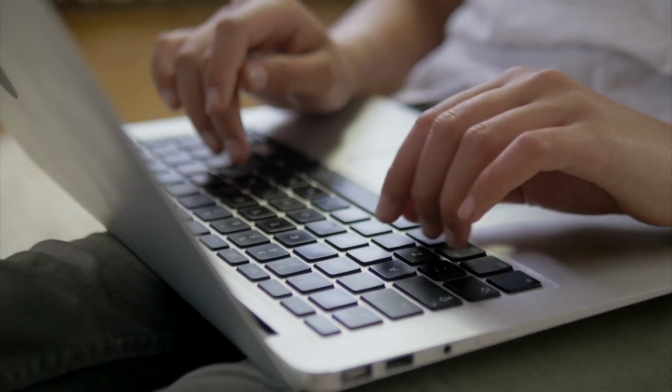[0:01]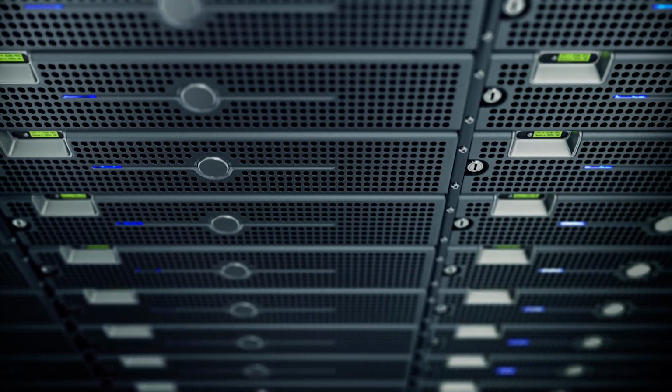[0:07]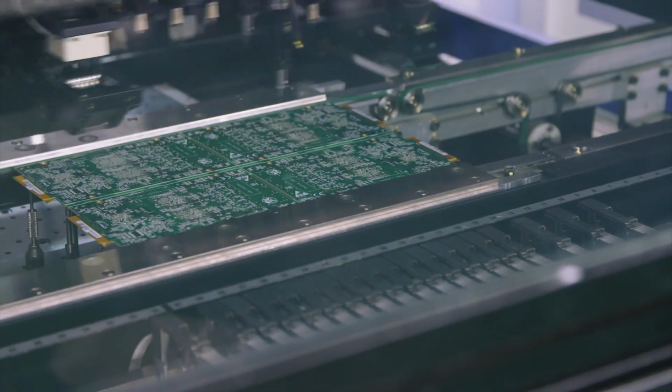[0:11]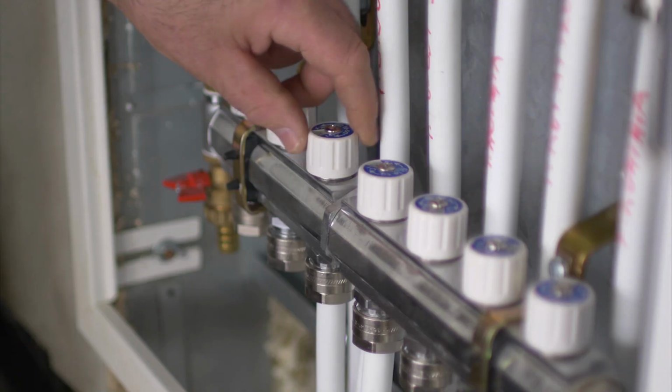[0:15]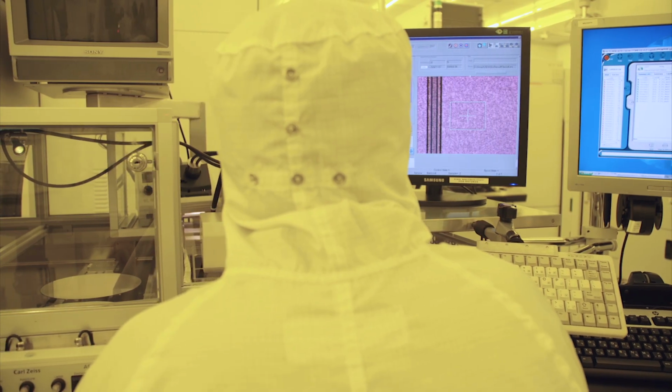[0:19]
If you ask someone to explain how a computer works from the ground up, their answer will probably start something along the lines of, well, a computer is a device that can do math, and it's based around transistors. To understand transistors, imagine a tiny water valve that you can turn on and off. If you chain these valves together in the right way, you can make logic gates, and then from there, you
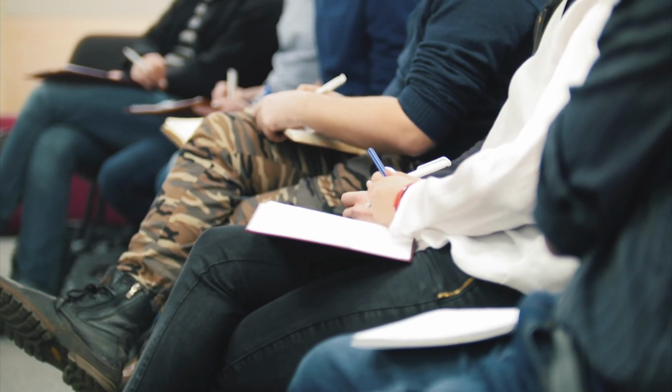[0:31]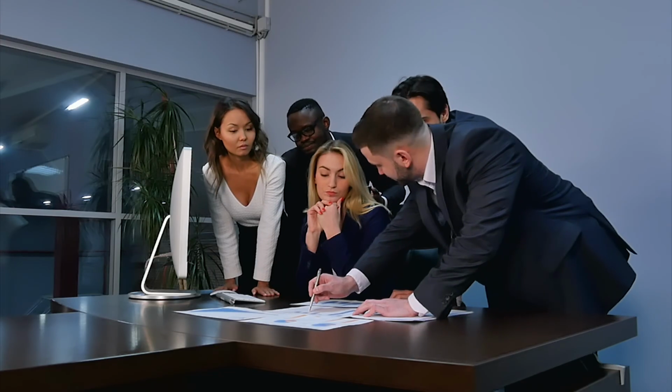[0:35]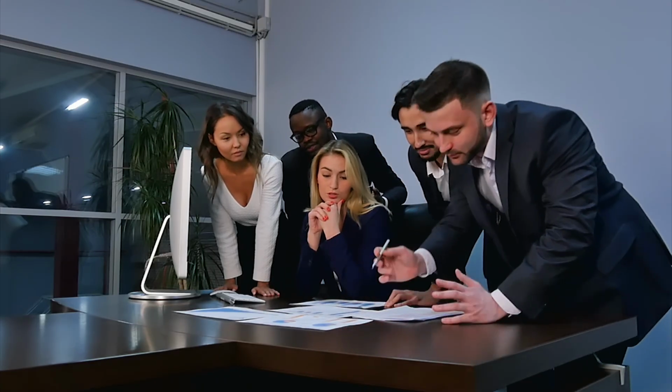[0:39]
can do computation. Now, picture this conversation happening between two people, but the one having it explained to them wasn't quite paying attention, but had to give a presentation about it on Monday to a bunch of engineers. So Monday arrives, they show up, and their boss goes, "Well, Gary, what are we building?" To which he replies, "Well, we're going to build a series of tiny valves that can do math." And everyone just went, "Well, okay then," and got to work. This is basically how I imagine the field of microfluidics starting.
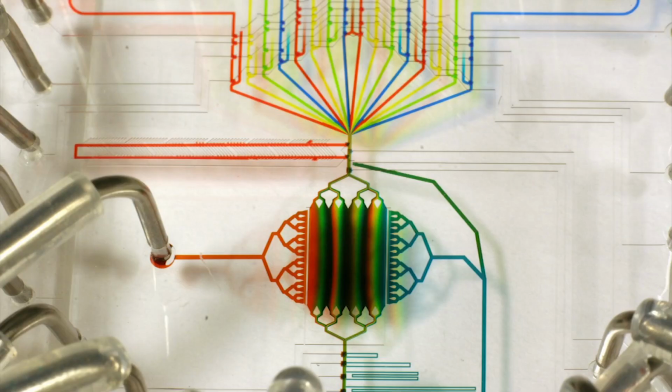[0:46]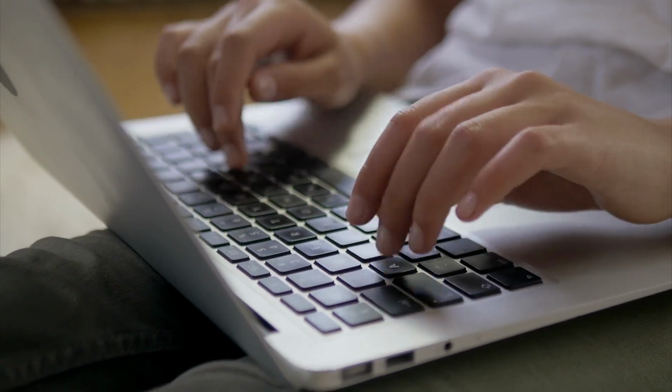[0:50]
As you probably guessed from the title, today we're talking about microfluidics. But just like asking what are all the things you can do with a computer, attempting to cover the whole field of microfluidics in one video would be insane. So let's just start with the basics.
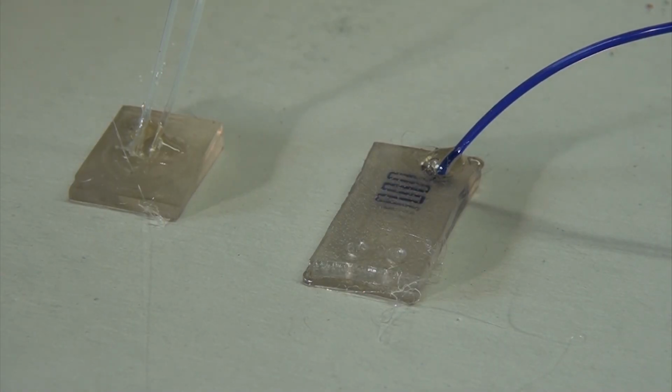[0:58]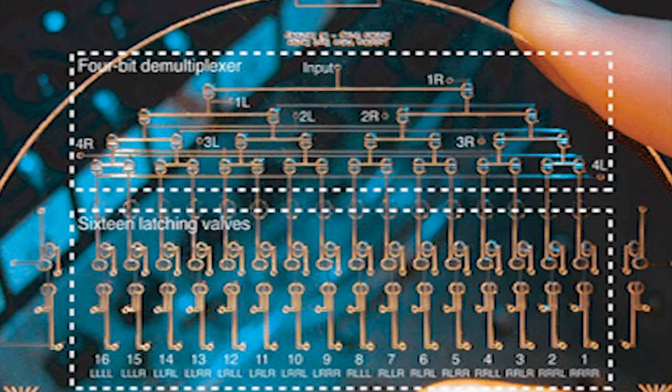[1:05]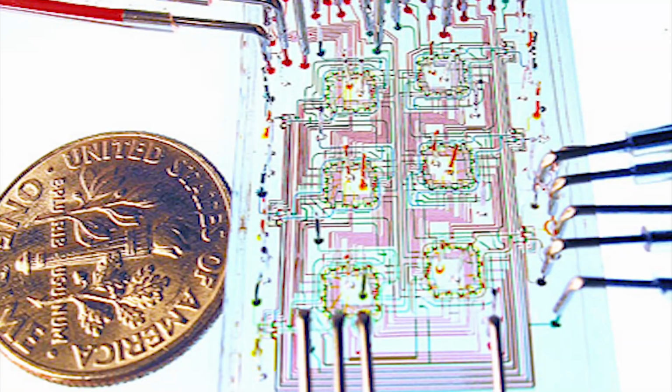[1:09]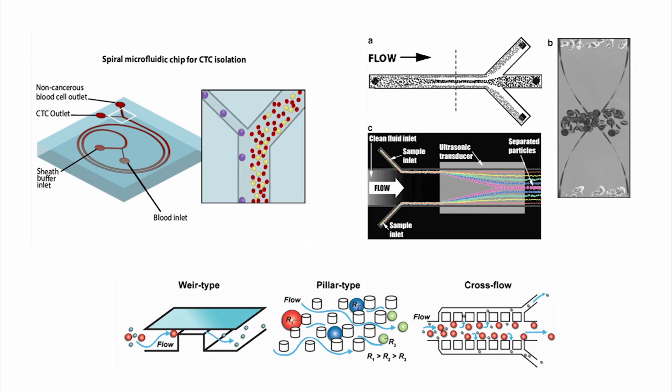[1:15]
Microfluidics is the study and creation of devices that use tiny fluid channels to accomplish an incredible array of tasks. And like computers, you can fill them full of tiny valves that, just like transistors, can be used to actually do math and form logic gates and such. But that's considerably more complicated than what we're going to be working on today. For this first video, we're just going to be focusing on designs that use the shape, size, and arrangement of solid channels to accomplish different tasks, from mixing to sorting, to give you an idea of the possibilities.
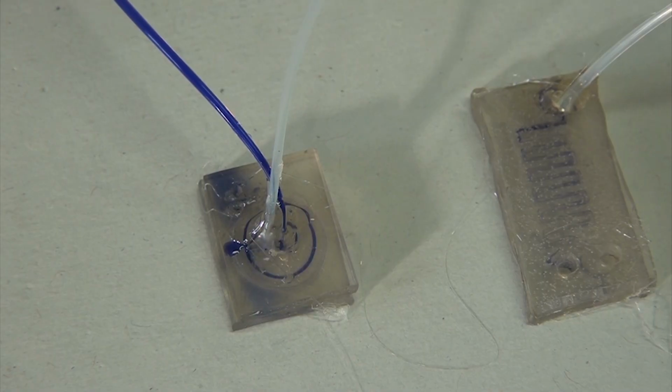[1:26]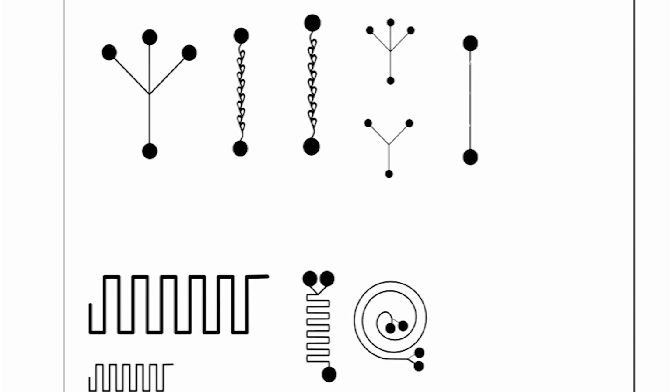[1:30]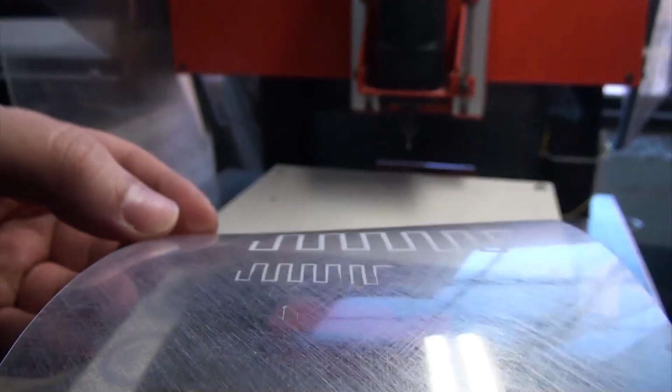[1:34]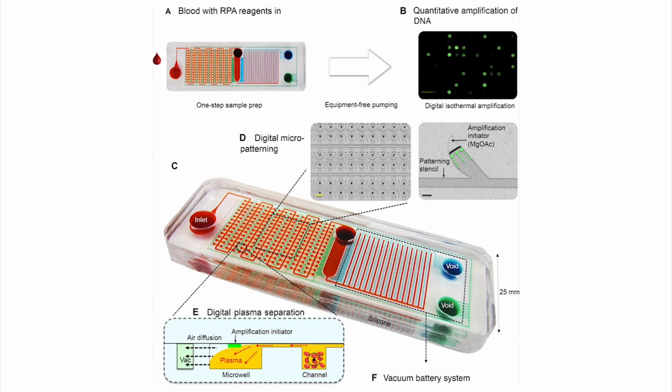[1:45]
One of the hardest parts of microfluidics is making the actual flow cells themselves. Designing them is fairly easy and can even be fairly intuitive, but taking a design and carving it into some block of material at the scale that flow cells typically operate is normally an expensive undertaking, requiring specialized equipment and weird, expensive materials. Consider that the channels in many of the images I've shown are a fraction of the width of a human hair, some only a few micrometers wide.
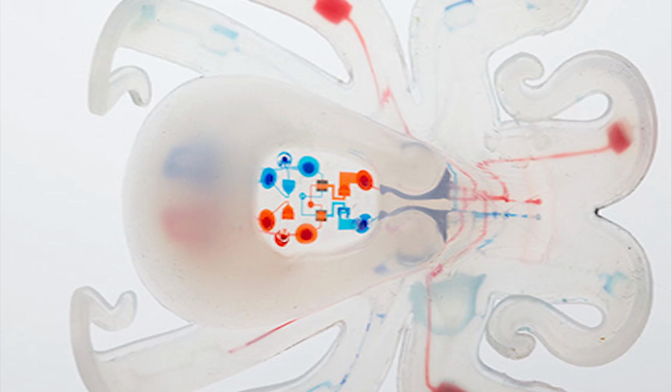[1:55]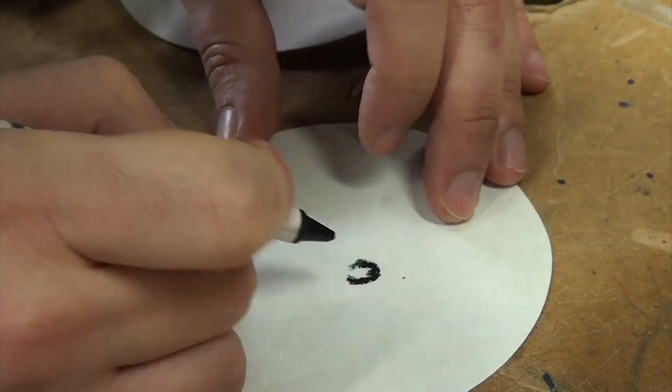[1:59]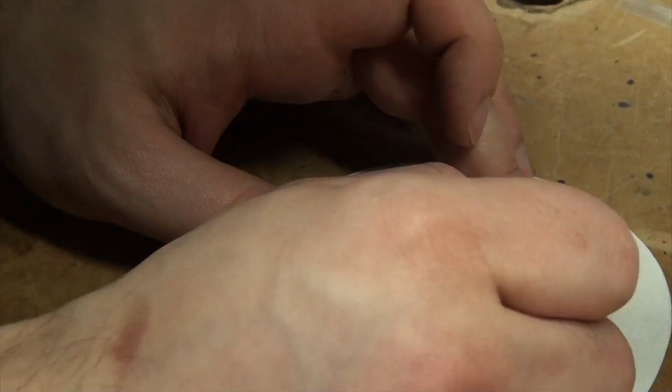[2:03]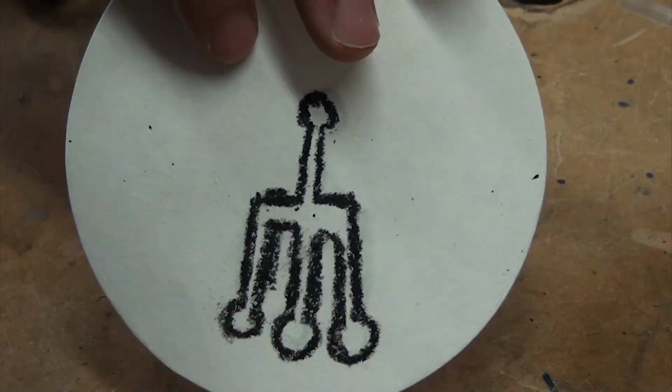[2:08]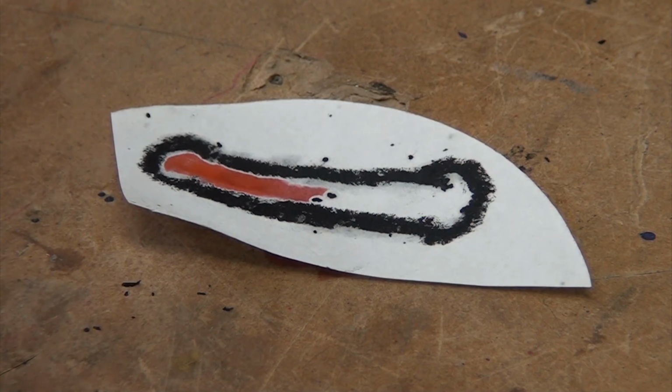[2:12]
So the question remains, well then how do average people ever get a chance to explore this amazing field, and reap the many benefits of incorporating microfluidics into your projects? Well, it really depends what your application is. Very simple microfluidics can be made using nothing but paper and crayons. Drawing an outline of a design on some paper is enough to make a pseudo-channel such that when you put a drop of water in one of them, it'll wick down the paper channel without bleeding into the surrounding paper. Or you can use masking tape to make very reasonable but simple designs.
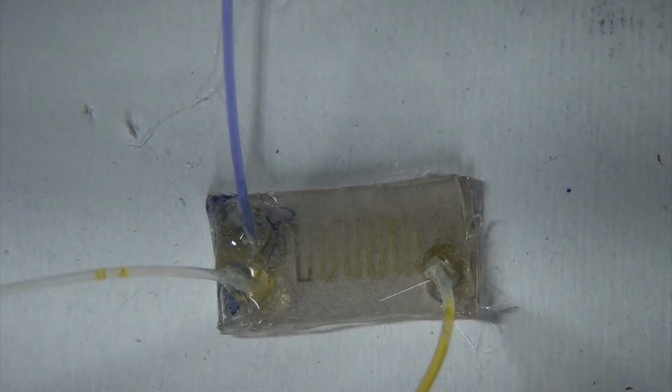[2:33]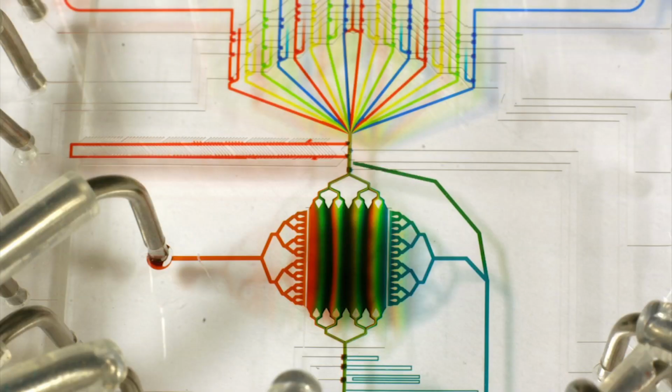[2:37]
Here's a simple one I made with some yeast cells flowing through it. The channels are made by a gap between two pieces of masking tape and sealed with another piece on top. But these methods kinda suck. Decent for simple diagnostics, but nothing compared to the actual utility of a flow cell that you can attach several tanks of liquid to and have fluid flowing through it doing chemistry, keeping cells alive, running tests, or anything else you could want for potentially hours on end.
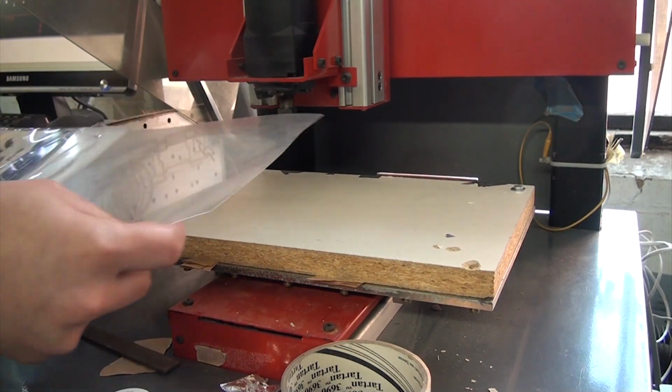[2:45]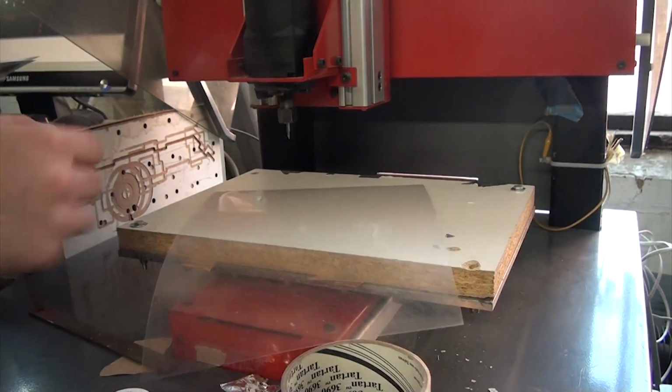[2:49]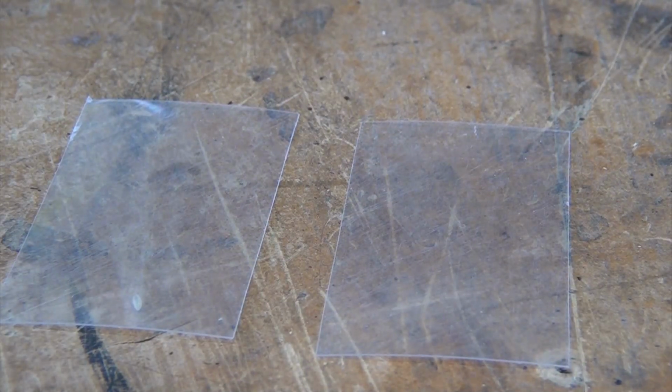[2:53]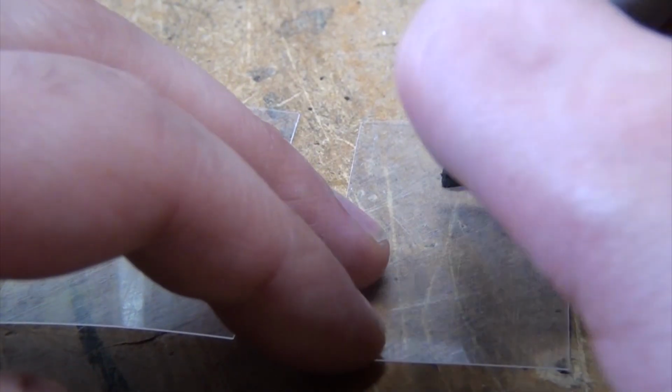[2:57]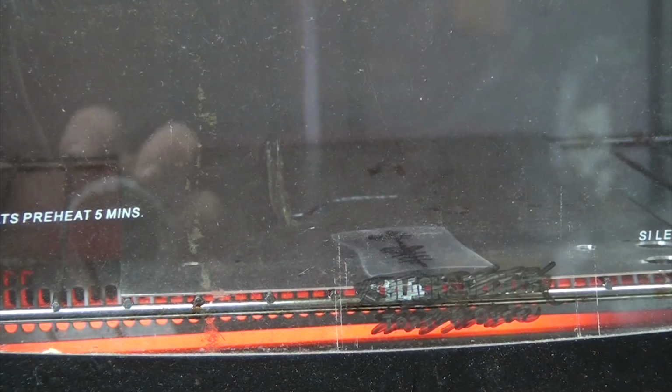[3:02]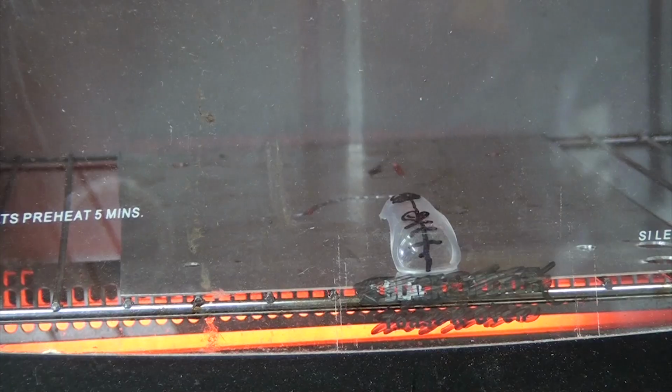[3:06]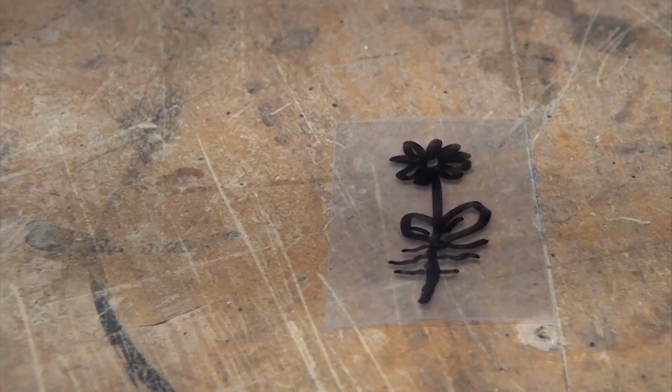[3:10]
For that, we'll need something which is normally sold as a children's toy and costs almost nothing. This is shrink film, also known as Shrinky Dinks. The idea is that it's a sheet of polystyrene which is pre-stretched as they made it. So normally you draw on the rough surface of the sheet with pencil crayons or your medium of choice, then bake the sheets, and as they heat up and melt, they'll contract, thicken, and harden, ending up about 1/5 of the original size. A pack of 6 sheets of this stuff costs all of 7 Canadian schmeckles, which is enough to make a couple dozen flow cells, at least.
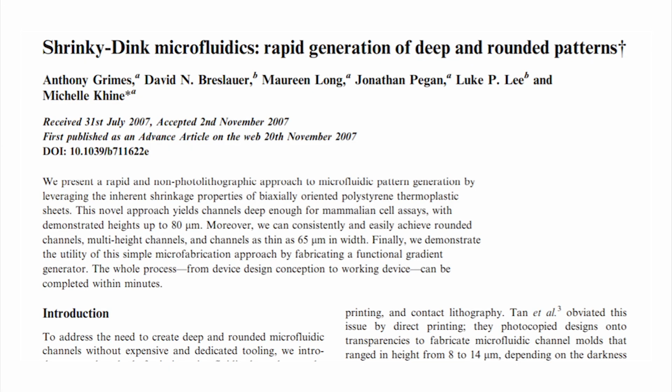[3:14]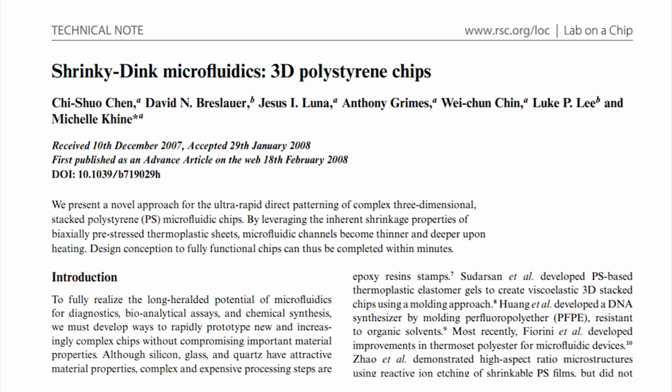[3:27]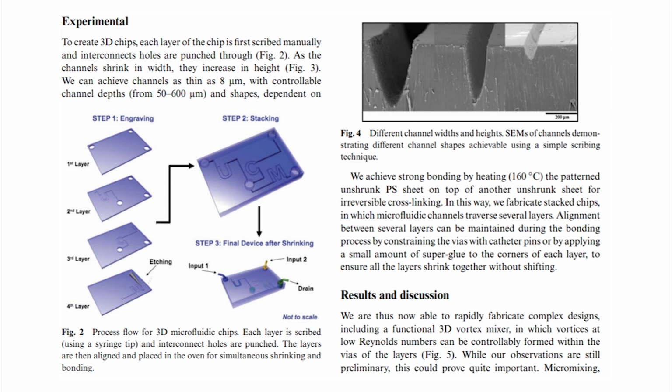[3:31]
The first paper that I found that uses this material used a standard printer to print designs onto the film, shrink it, and then use the raised ink as a negative mold to make the actual flow cells using PDMS, a type of clear, castable silicone. But a later paper by the same group forgoes the PDMS and just carved their design into the plastic itself. In the paper, they use knives and similar cutting tools to scribe their designs into the plastic. This is great for giving very thin channels, but the issue is that it doesn't quite give as much flexibility in design choice, and they made their designs by hand.
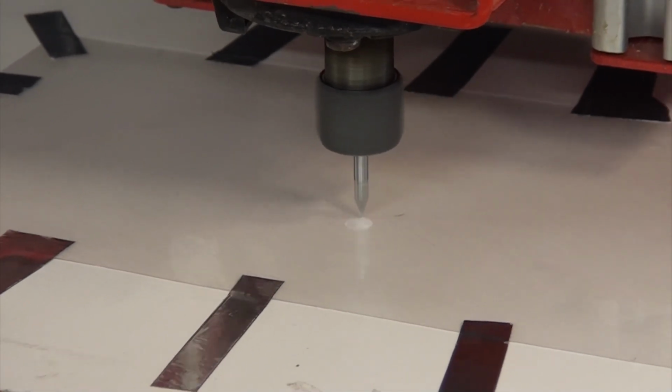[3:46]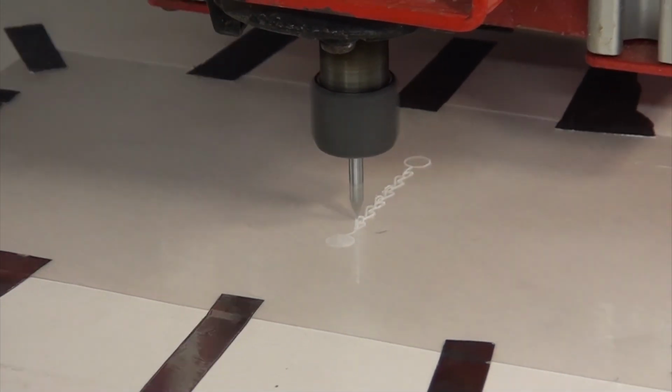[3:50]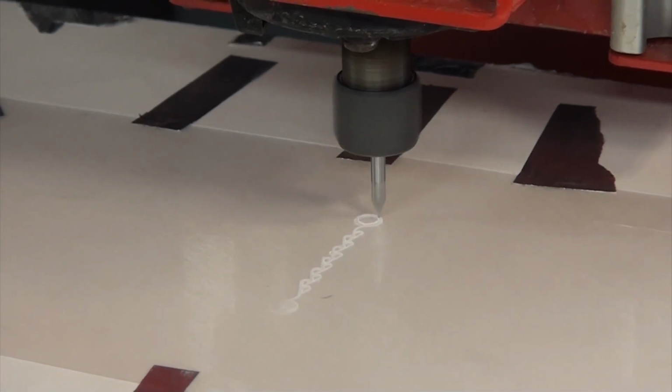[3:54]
I chose to go a different route and went with CNC milling my designs in the plastic using the tip of a V-cutter. This gives way more control and lets you do far more complex designs, though there are a few tricks to actually make this work.
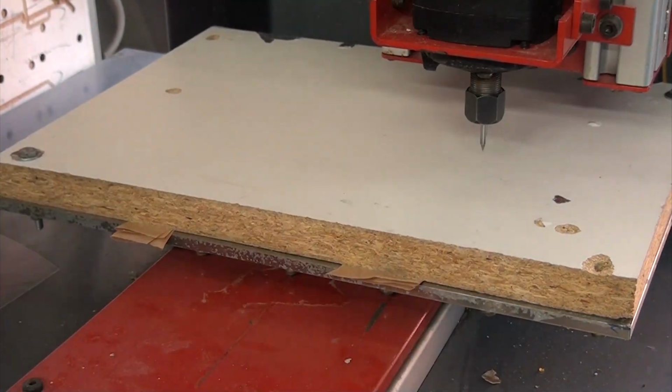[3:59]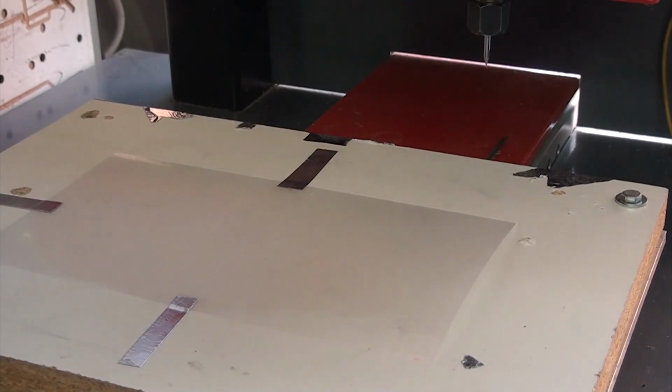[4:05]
First, the bed of the CNC cutter must be as flat as physically possible, and since the film naturally wants to curl, a lot of tape needs to be used to pull the sheet tight and flatten it to the bed. Also, make sure the rough surface of the plastic is the one you're cutting into.
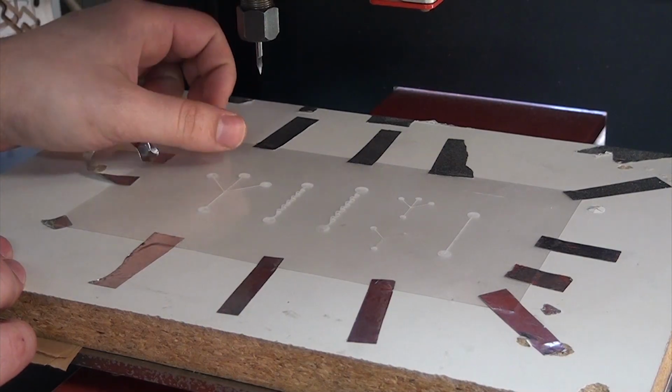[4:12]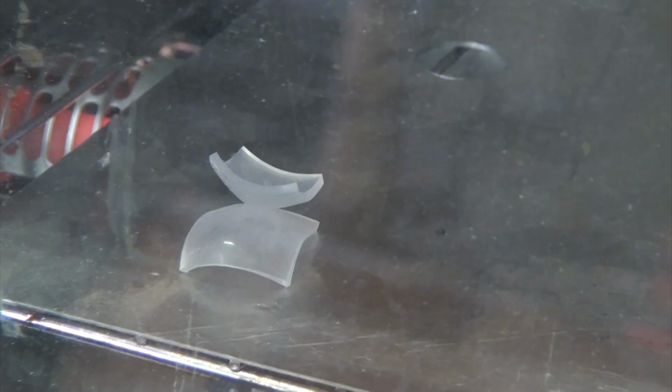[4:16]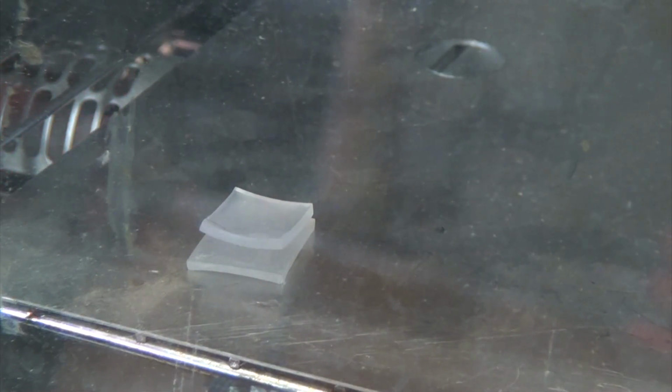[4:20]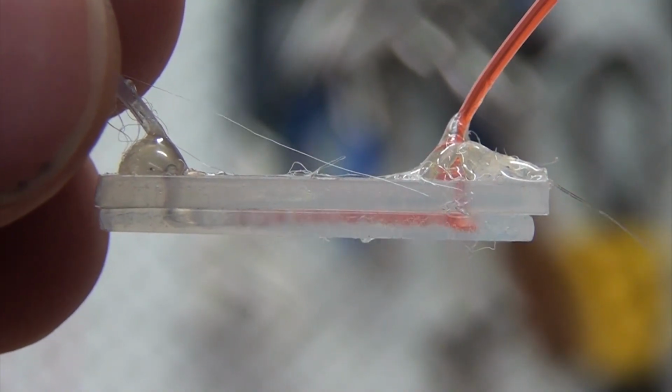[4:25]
Next is that we don't want to cut through the plastic, in fact, we barely want to cut it at all. As the parts are baked and shrink, any detail we carve into the surface will shrink in the X and Y direction, but will become much thicker in the Z direction. So a shallow, wide groove becomes a deep, thin trench after heating.
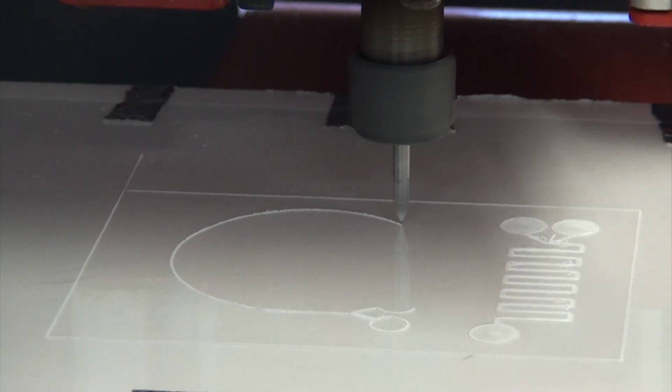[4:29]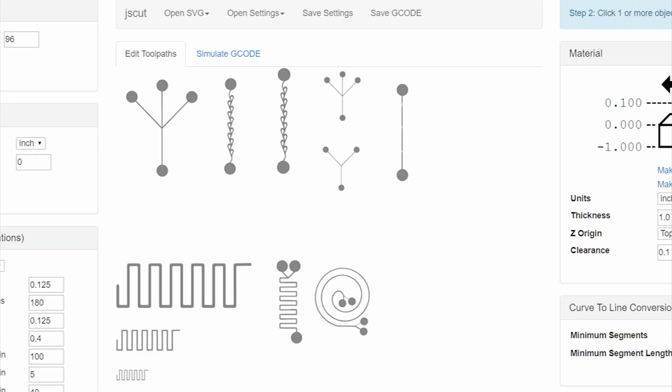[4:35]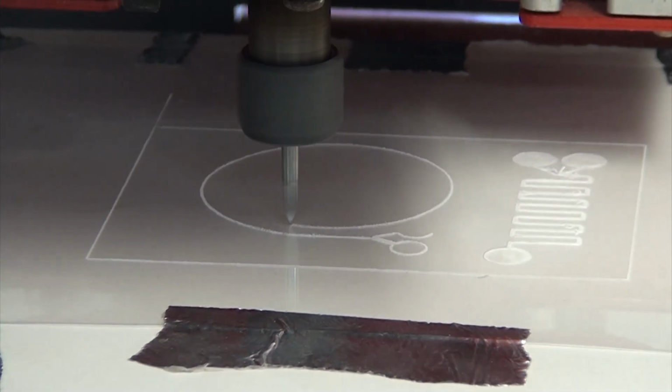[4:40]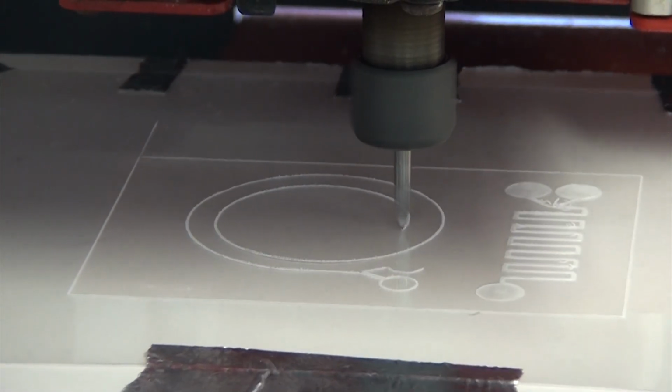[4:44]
Okay, let's cut some designs. As usual with my particular setup, I made my designs in Inkscape and used an online tool called JSCut to generate the G-code to run the CNC cutter. I've put a link to all the SVG files I've used in the description if you'd like to use the designs I made, but you'll need to generate your own G-code to match your machine.
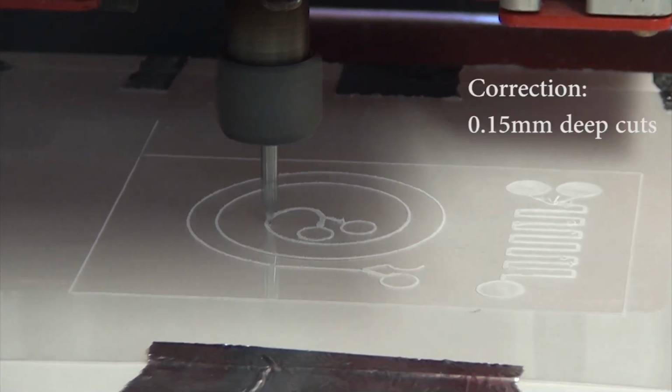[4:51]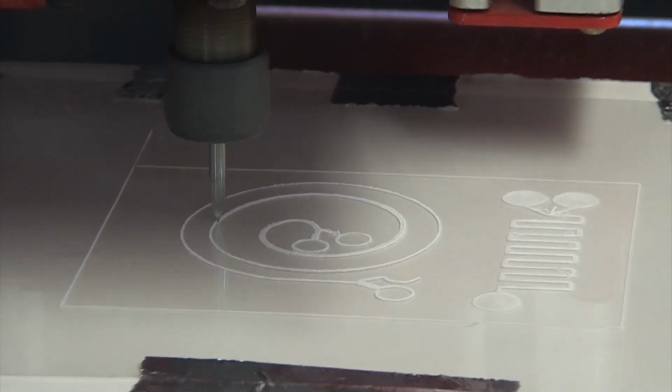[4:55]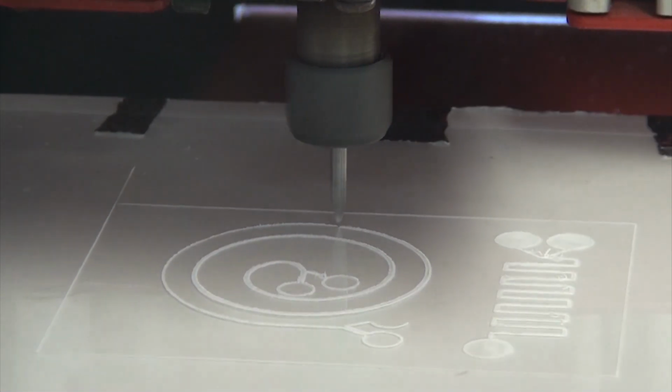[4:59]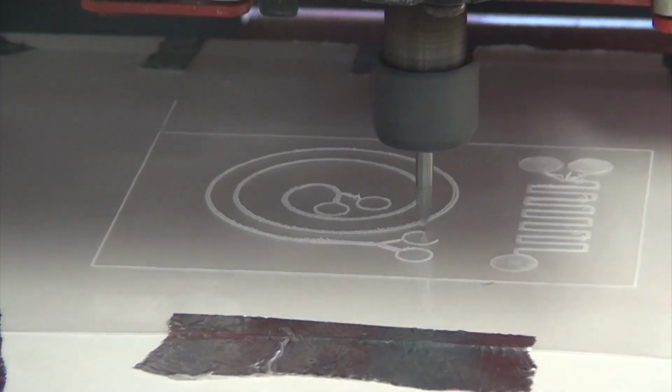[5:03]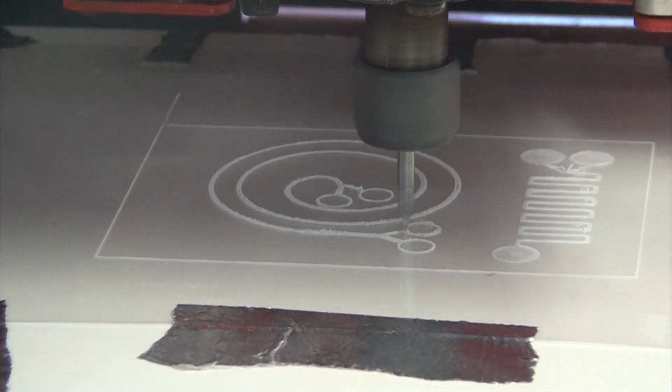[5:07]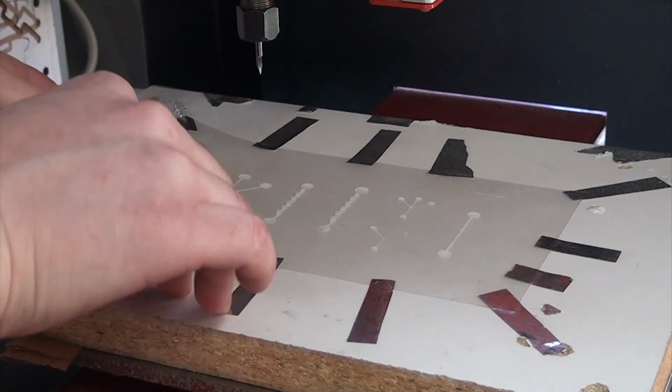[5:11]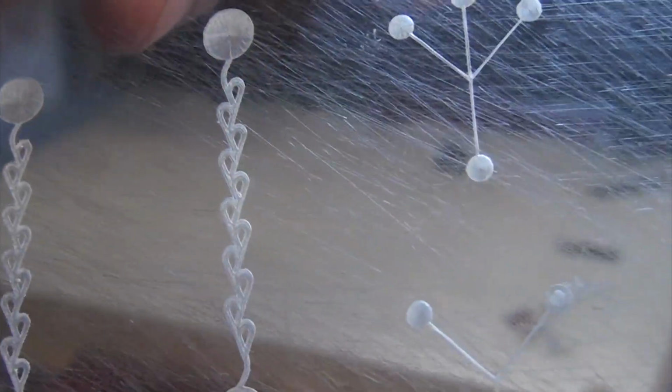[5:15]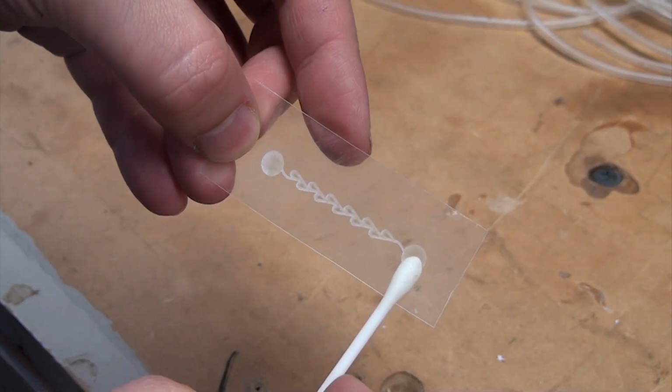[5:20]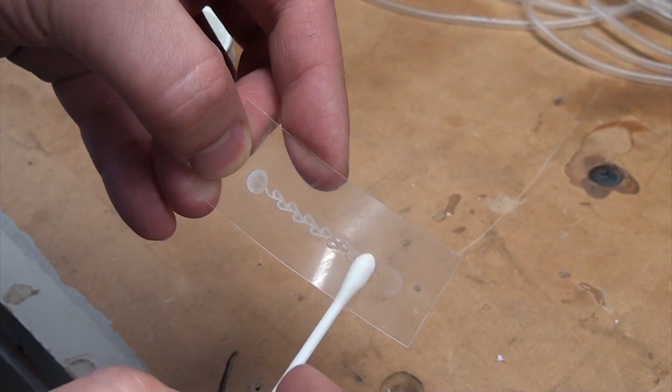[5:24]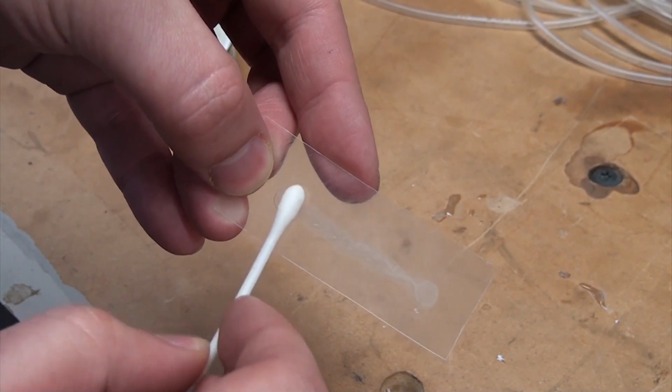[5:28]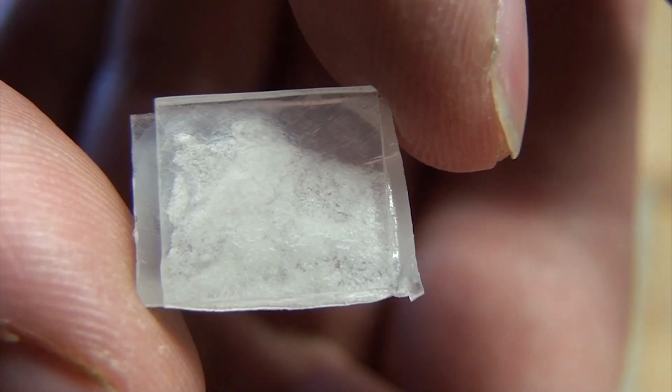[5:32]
Before we go further, there's still a bit of debris in the channel, and literally anything left in there will end up clogging the final cells. So manually pick out any large debris, and then using a bit of acetone on a swab, a very quick, gentle pass removes any powdered plastic and clears the channels. Don't use a soaking wet swab, it only needs the slightest hint of acetone on it. Any more and you'll seriously damage the plastic and have to start all over.
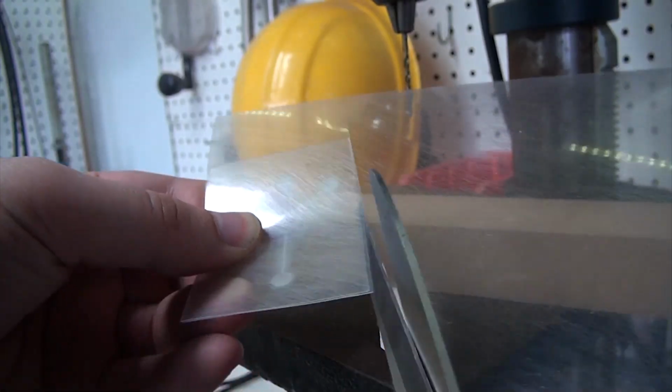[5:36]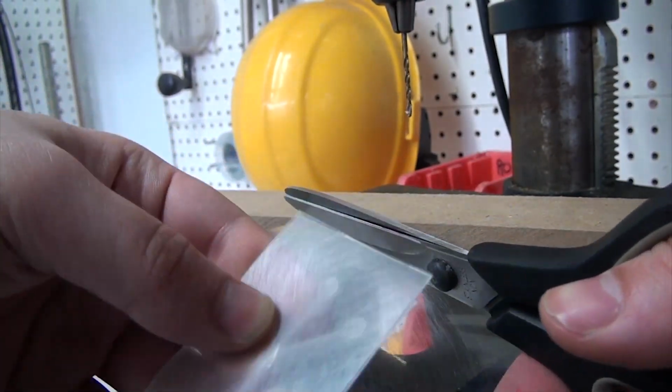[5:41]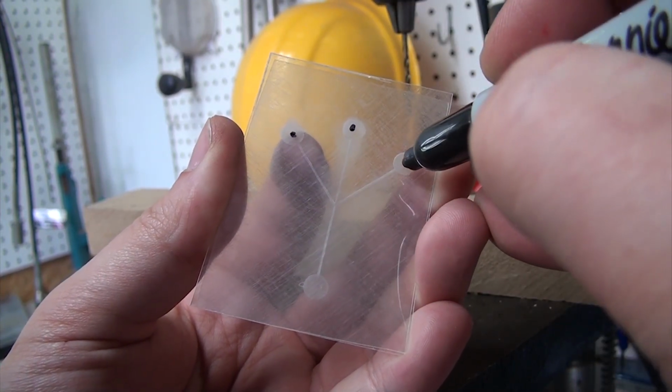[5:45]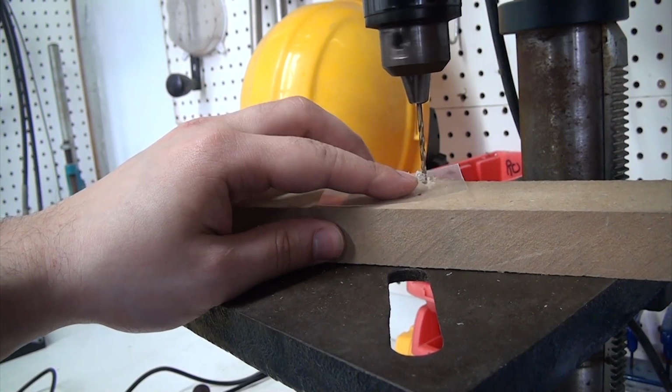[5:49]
Before we can do any shrinking, we need to make the top plates for all of the flow cells. I cut pieces to match the designs out of scrap material from previous runs, and drilled 4-5mm holes to match the lower design. As you do this, make sure the rough faces of the plastic are facing each other, but once that's done, it's finally shrinking time.
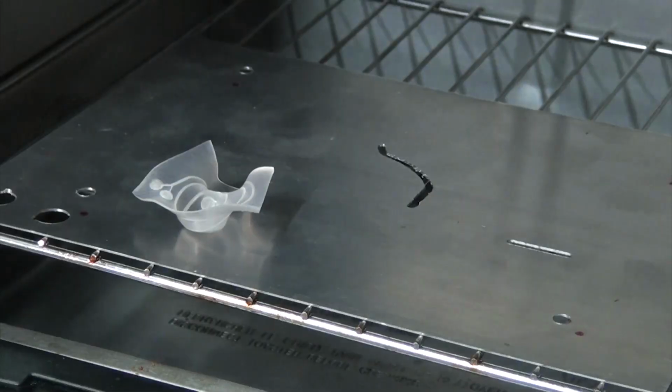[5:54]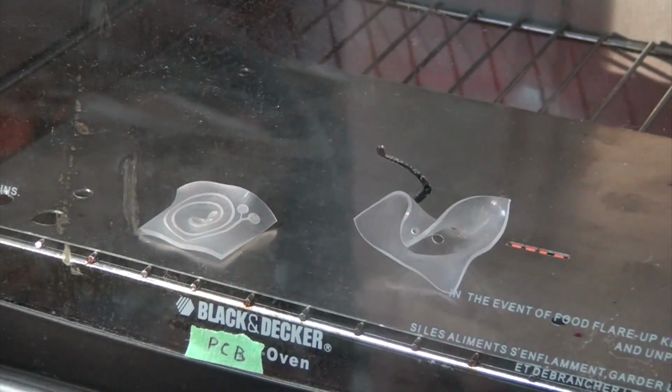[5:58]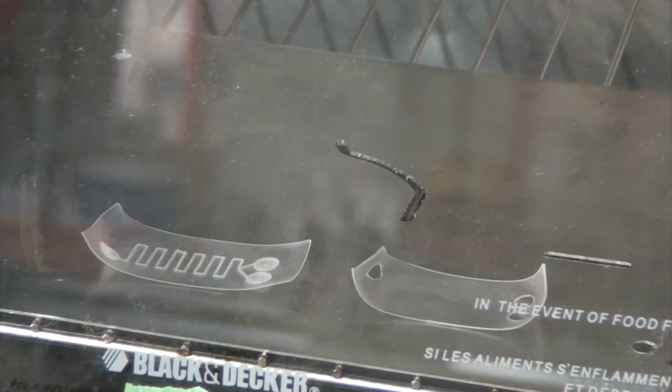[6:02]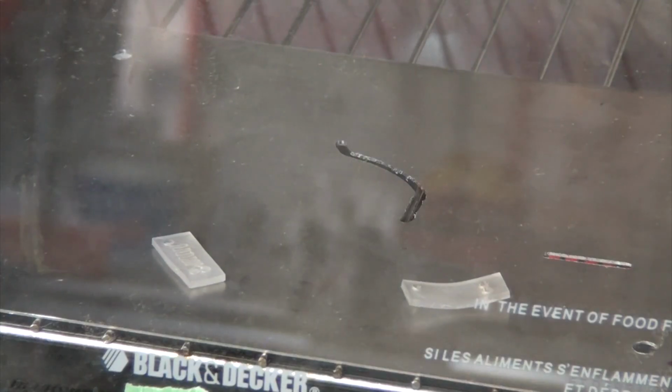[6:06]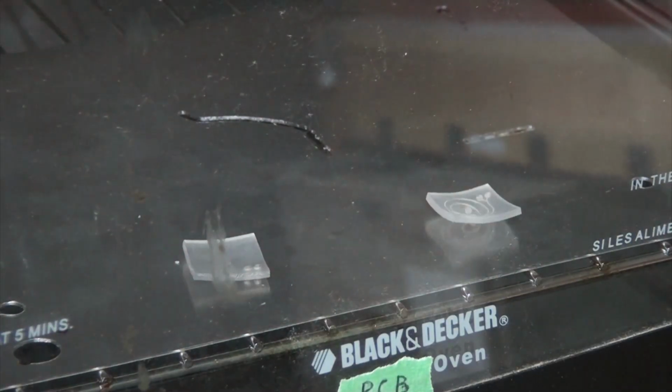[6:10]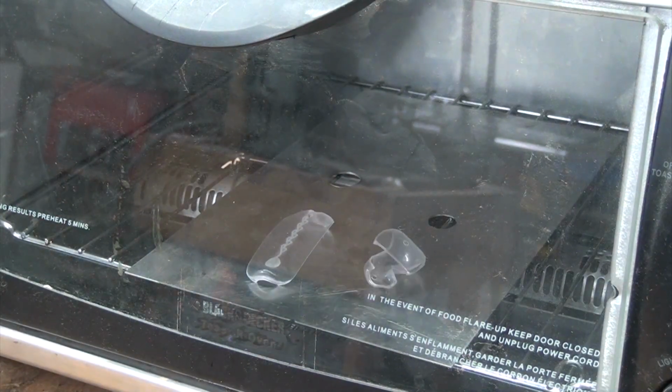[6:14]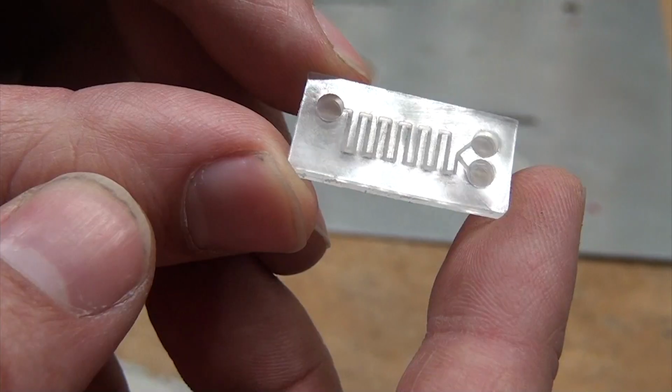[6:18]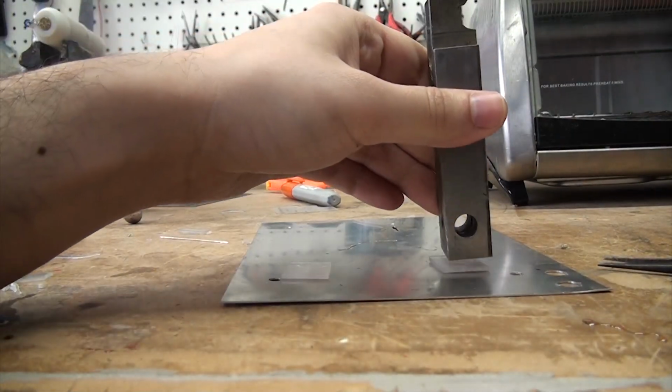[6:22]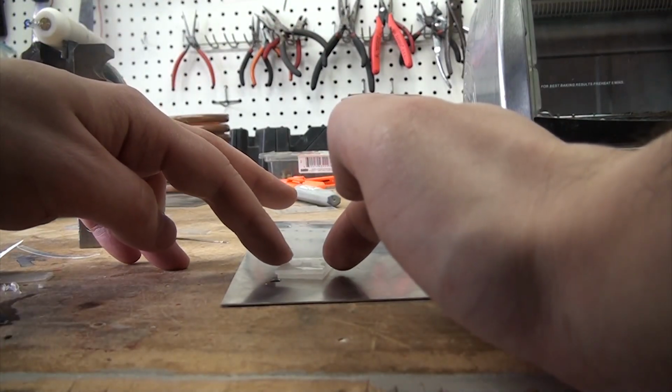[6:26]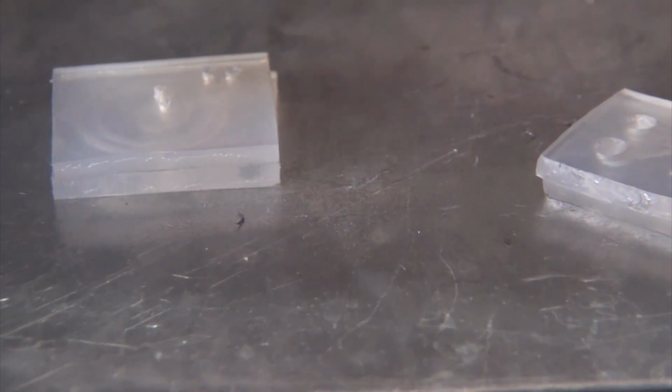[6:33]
The shrinking can be a bit chaotic, but don't panic. Given a bit of time, it usually evens out, though sometimes it may need a gentle nudge. Once everything is shrunken, you can take them out and gently flatten them if necessary while still warm. Let them cool enough that you can touch them, then stack and align the halves and pop them back into the oven. This is the hardest part of this process, and getting the two halves to stick is like the most frustrating game of chicken.
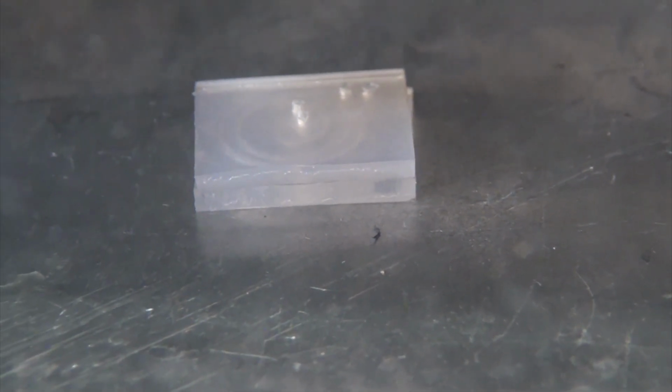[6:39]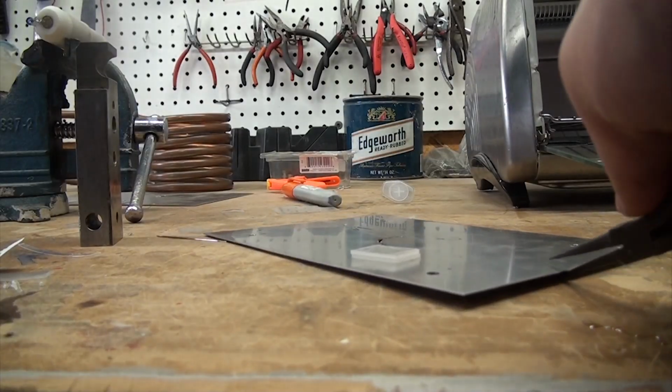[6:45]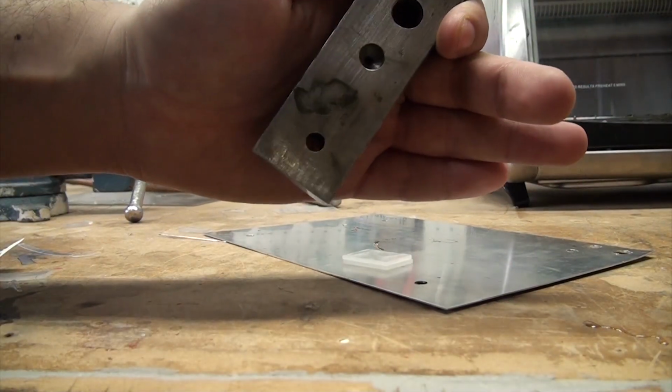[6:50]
If you wait too long, everything melts and is ruined, but if you don't wait long enough, they won't stick properly. So it can take several attempts. Luckily, if you're careful not to squish your designs, if a bond fails, you can just try again. In either case, when you think you're ready, quickly take the tray out of the oven and use a flat bit of metal to very gently press the two halves together.
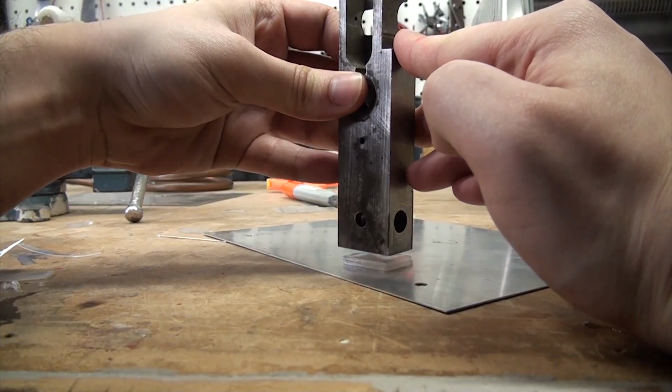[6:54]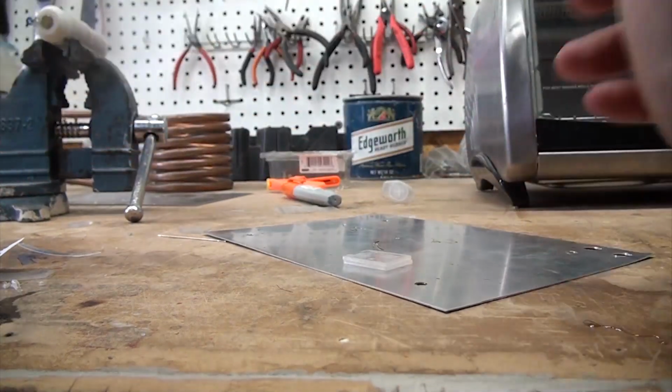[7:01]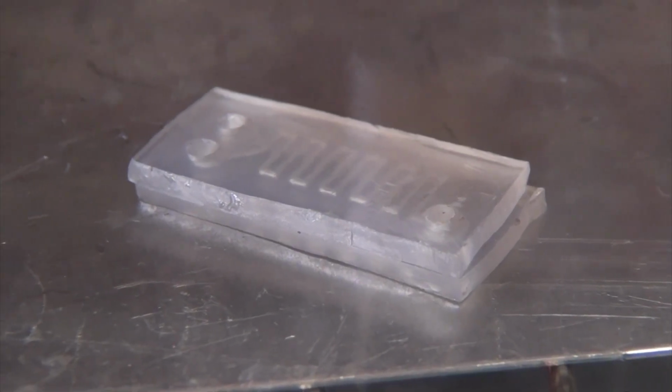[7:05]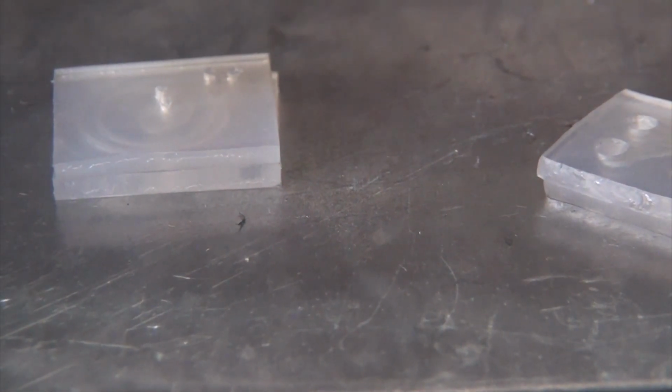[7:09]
Once it starts to firm up, remove the metal or it'll cool the half it's touching too quickly, making the pair crack back apart. Also, don't push too hard or you'll squish your design and plug one or more of the channels. One quick note is that you don't need to limit yourself to just two layers. If you're feeling adventurous, you can do more layers and do it as high as you like in theory. I just didn't bother for this video.
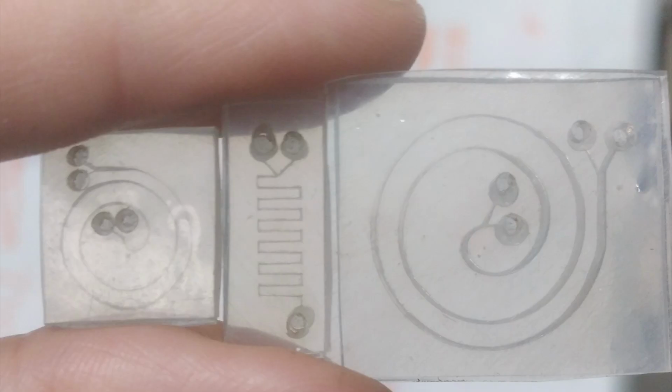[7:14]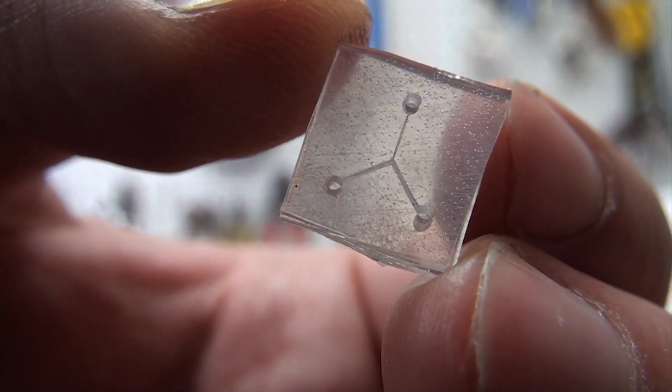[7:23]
But when everything goes just perfectly, you end up with these amazing little flow cells with perfect channels at a fraction of the size that would otherwise be possible with just a CNC machine. The smallest channels I've made are less than 100 microns in diameter.
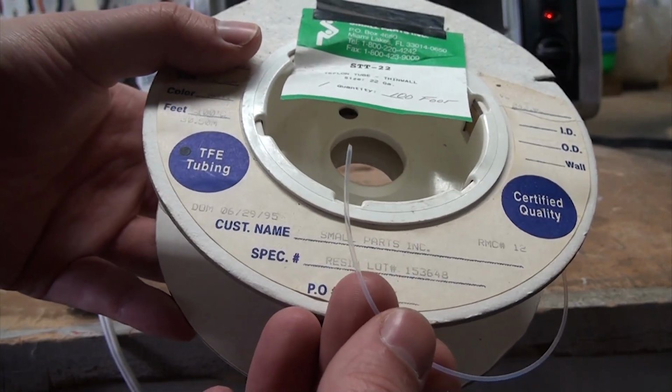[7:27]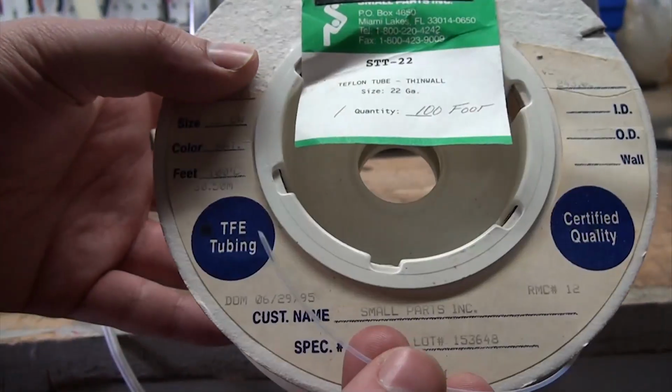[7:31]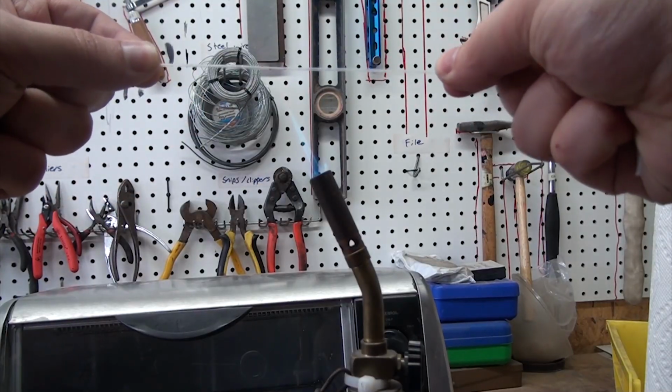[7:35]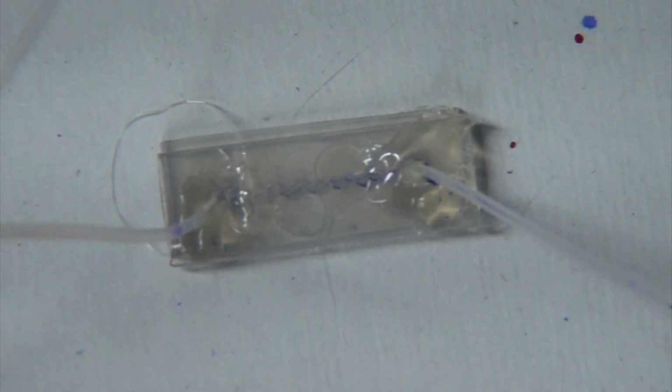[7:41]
Before we can test these, we need to add some plumbing. I'm using this 1mm Teflon tubing that we just happened to find, but really any small tubing should be fine. I like this stuff because even if it's too big, a bit of heat and you can stretch and shrink the diameter for a perfect fit. For now, I'm using hot glue to seal these as I'm not doing anything more delicate yet, but that's not really a great method for this.
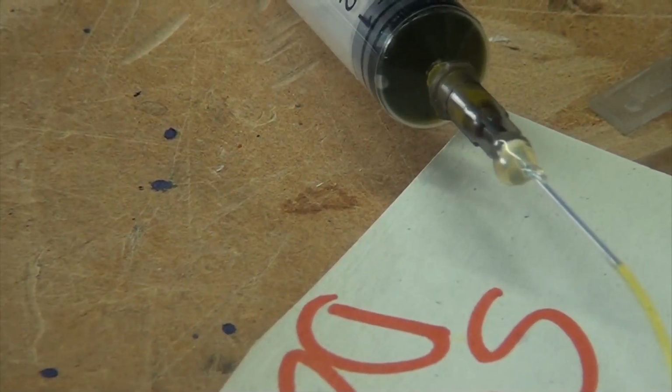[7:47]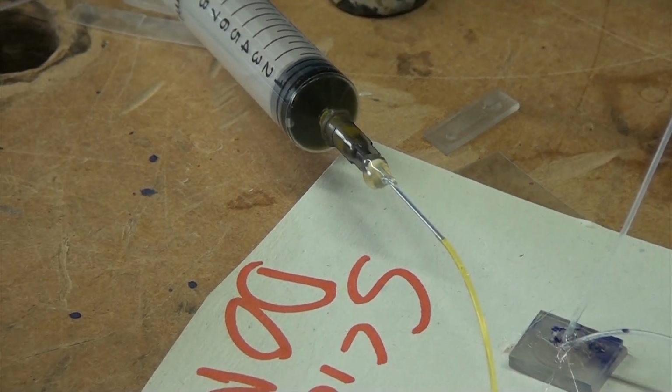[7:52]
To get fluid into the tubes, I use a needle with a sharp point cut off, which is then inserted into the tubing and glued to seal it. Okay, let's fire these up.
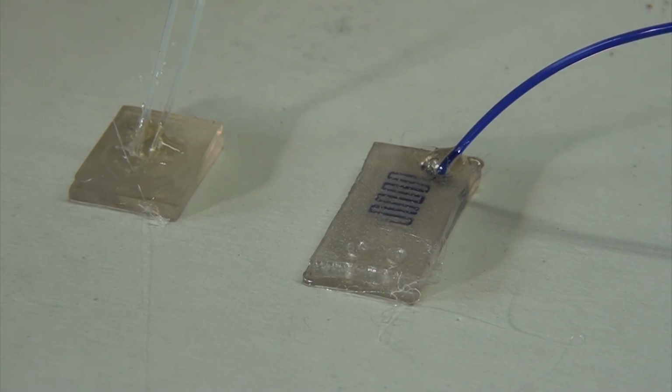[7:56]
First, a simple mixer. The idea here is that you put two different fluids in one end, and you get a mixed fluid as the output. Here's the first test running it in reverse to save on plumbing. You can see everything flowing beautifully.
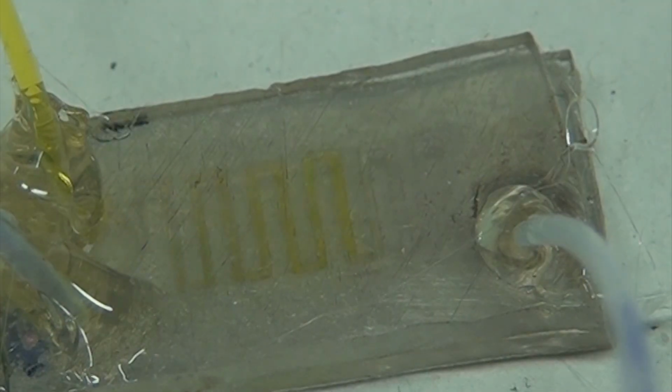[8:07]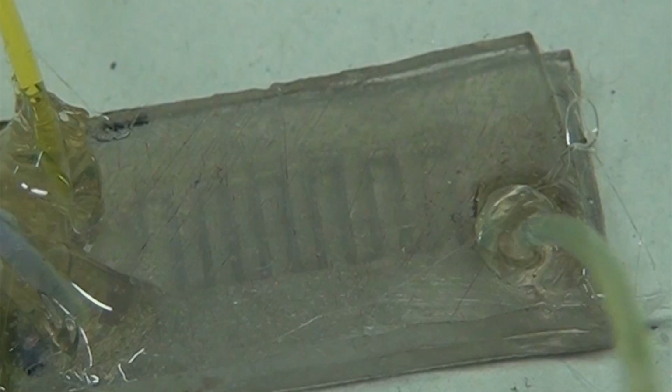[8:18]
Now, running it properly, I've got yellow and blue dye connected to the input, and I'm using suction on the output to pull the two fluids through at the same time evenly. As you can see, once the fluids mix, we get a nice green output.
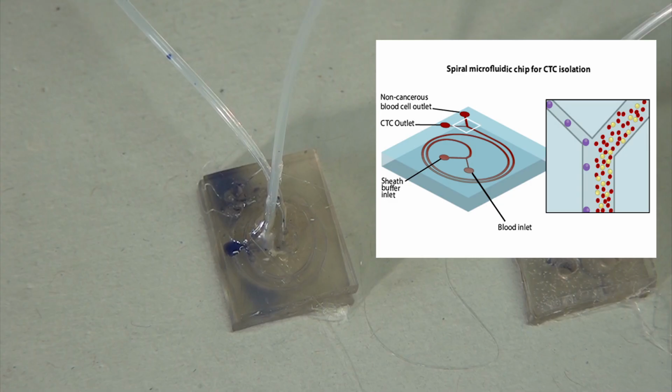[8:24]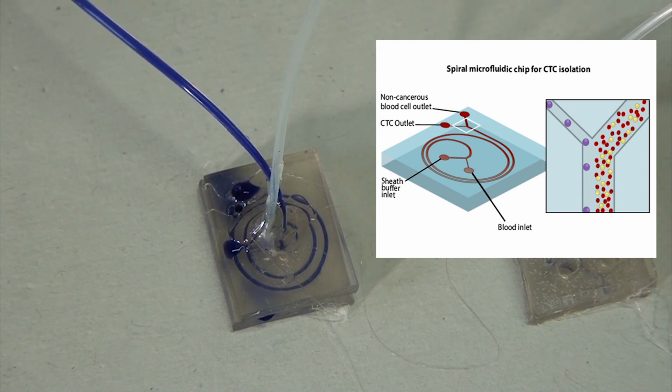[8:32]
This next design I actually made too small to save on CNC time, but it's meant to be a lot larger. There are two inputs and two outputs, but for the first test I only plumbed up a single input. The idea is that you're meant to flow saline through the bigger input and put a blood sample in the smaller input. The blood gets carried around the spiral, and as it flows, it tends to hug the inner wall.
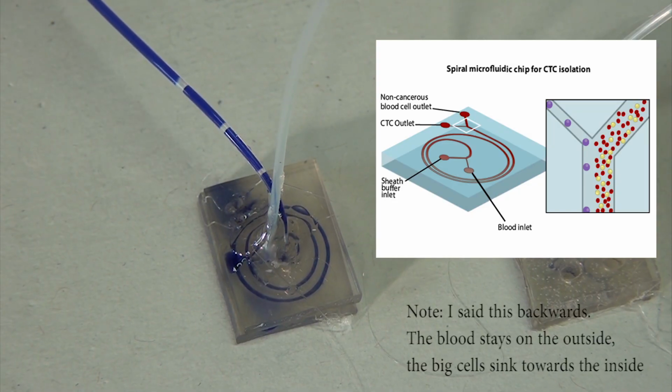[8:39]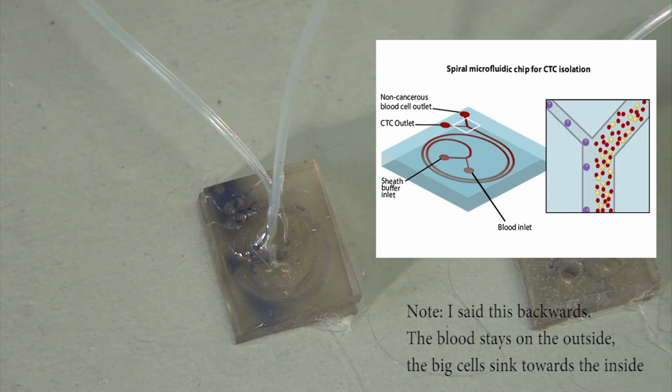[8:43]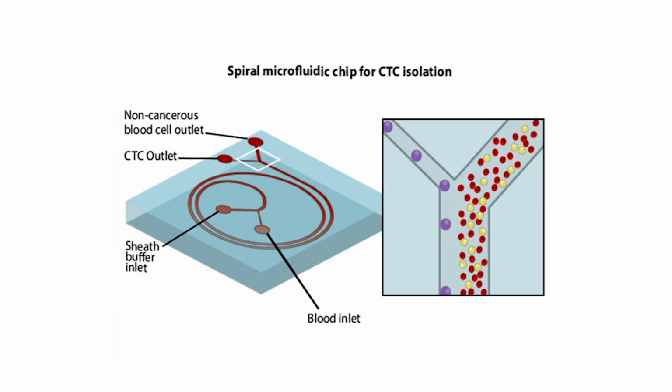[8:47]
But the largest cells will slowly migrate towards the outer wall as the cells whip around the spiral, just like if they were in a tiny centrifuge. This is useful because any cells large enough to be affected and migrate will tend to be the extremely rare, oversized cells, which are indicative of an early stage cancer.
So using this, you can actually collect lots of them so they can be analyzed, even though they're rare and hard to target. You could, in this way, potentially figure out what sort of cancer you have and where it probably is using just a blood sample. We may come back to this design and explore it in more detail in a future video, and maybe even give it a test with some real blood.
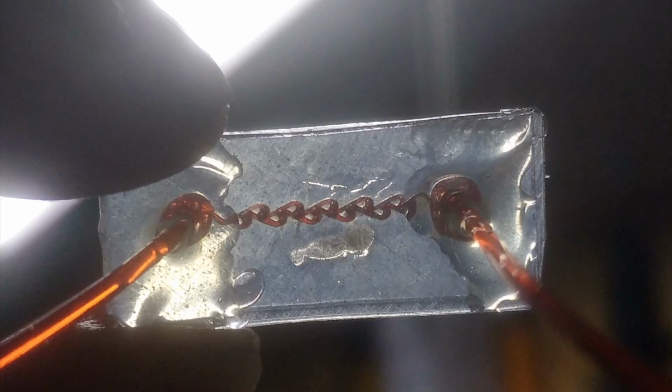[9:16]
Finally, this one I was particularly excited about because there are almost no papers that actually made a microfluidic version of this design, and most just simulated it. So this is actually one of the smallest of these in the world as far as I can tell. Many of you probably recognize this as a Tesla valve. It's a one-way valve with no moving parts.
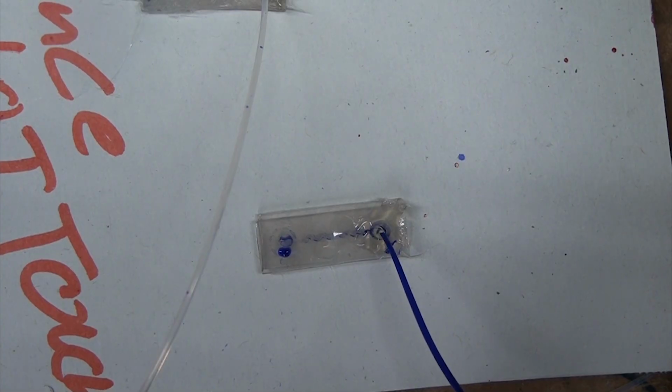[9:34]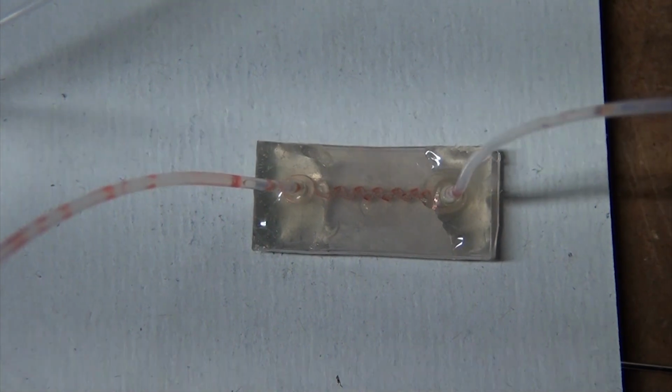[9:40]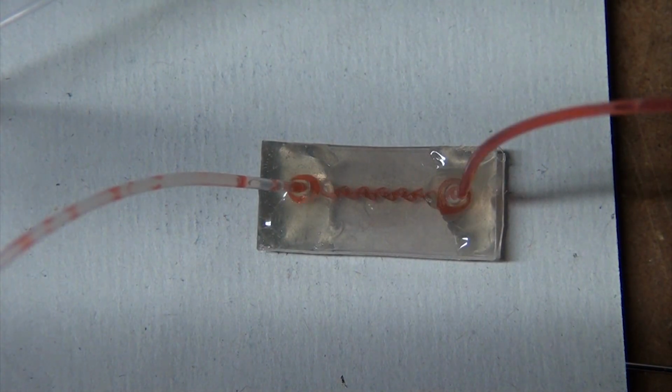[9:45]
Fluids can only flow in one direction easily, and in the other direction they get turned around and sort of self-clog, stopping the flow. Because of how tiny this is, it's hard to really demonstrate the one-way action. As I'm feeding in liquid, it's easy to feel the difference though.
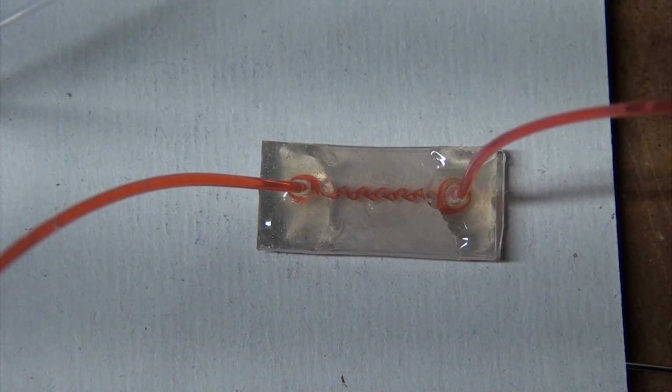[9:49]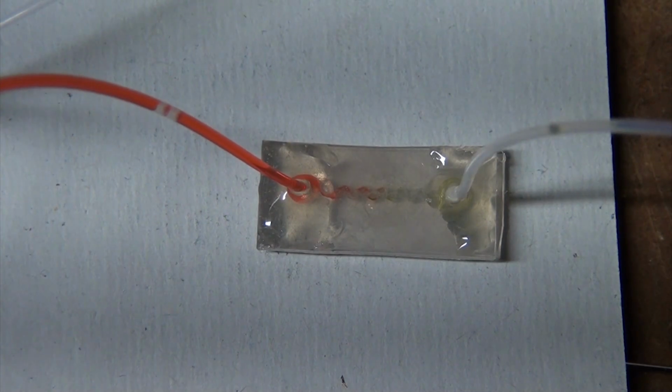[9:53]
In one direction, fluid flows easily and gently pressing on the syringe is enough to make it flow. But in the other direction, I have to apply significant force to overpower the system. I can do it, but when I release the pressure, fluid instantly stops flowing. So I'd call that a success.
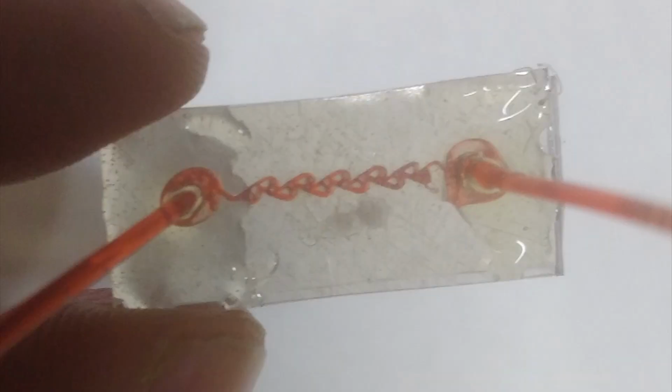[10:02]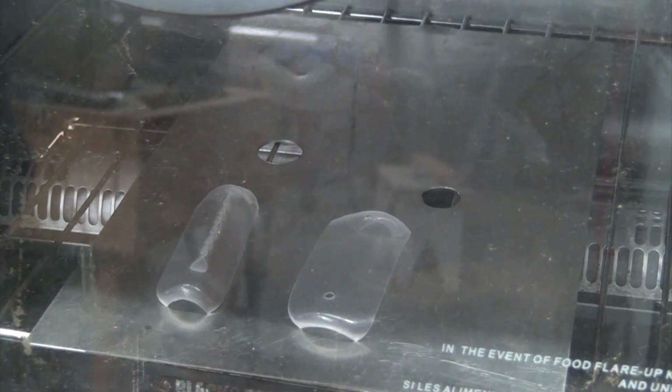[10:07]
Either way, this test is proof of just how much detail you can obtain with this method. These channels are tiny, but they maintain their shape through the whole process, and the design even works well. I can see why lots of people simulate these, though.
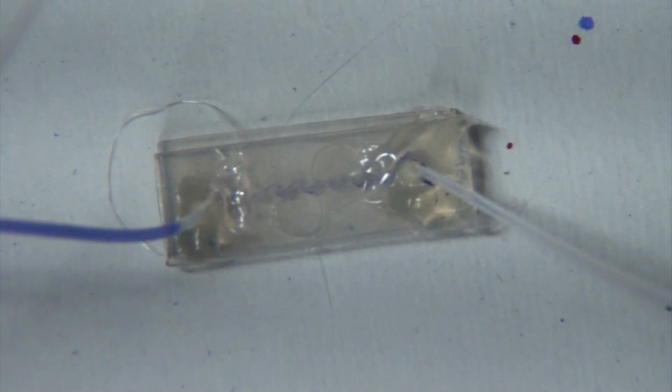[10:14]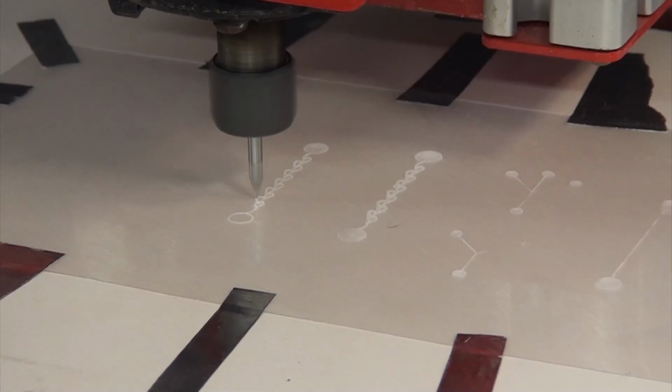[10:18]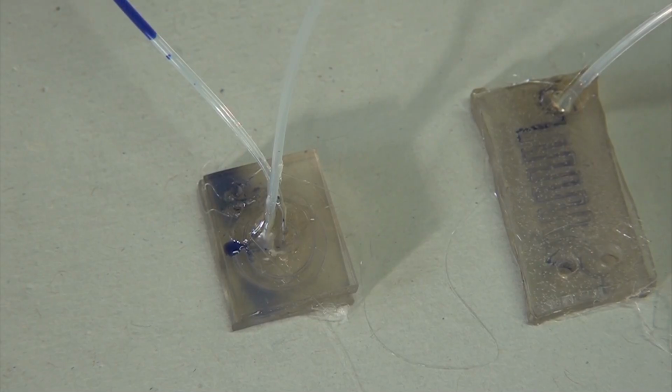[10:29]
Having made this, I can see why you'd want to tweak the design a bit to improve its performance on such a small scale. But luckily, with this method, making these cells is so cheap and easy that if you come up with a better design, you can have it made in no more than an afternoon for nothing more than pennies worth of material. But that's where I think I'm going to leave it for now.
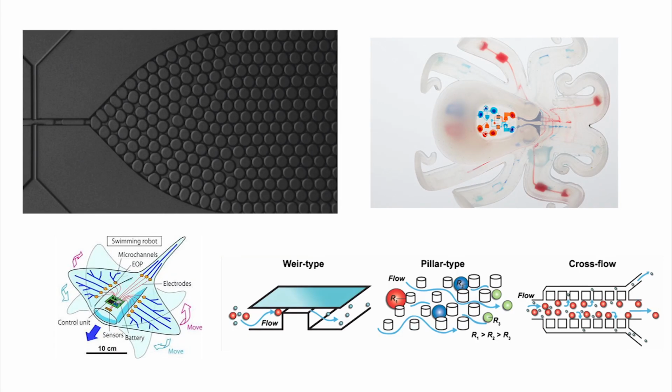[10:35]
Microfluidics is such an amazing field, and we'll definitely be talking about it again in the future. I had to leave out so much, so I hope this small taste was enough to get you excited and start thinking about what crazy, tiny devices you want to make. And if you've got ideas for flow cells you'd like me to try and make, be sure to leave me a comment and let me know.